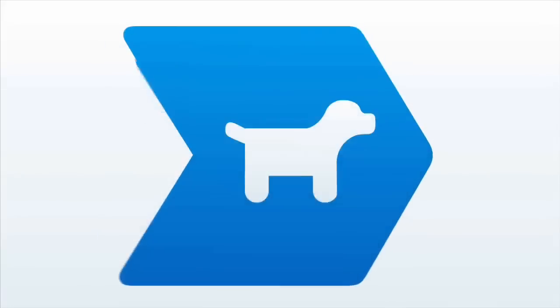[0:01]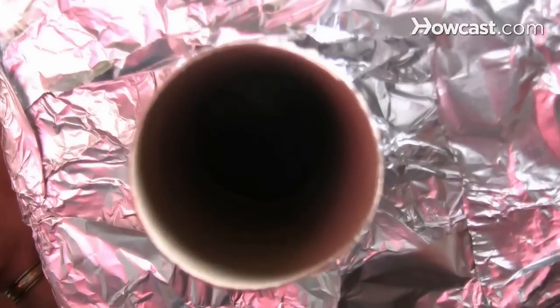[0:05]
How to make a spectroscope. If you're itching to discover the wonders of the world around you, this guide will have you gazing at the unique spectrum fingerprint of each element right at home.
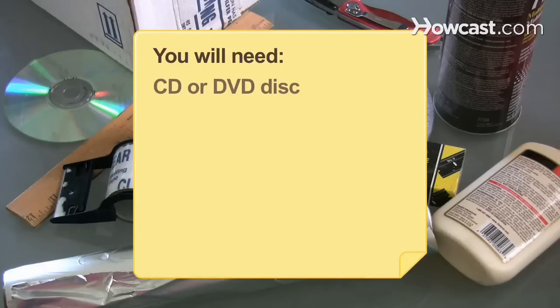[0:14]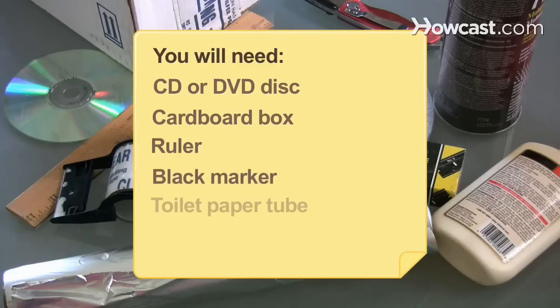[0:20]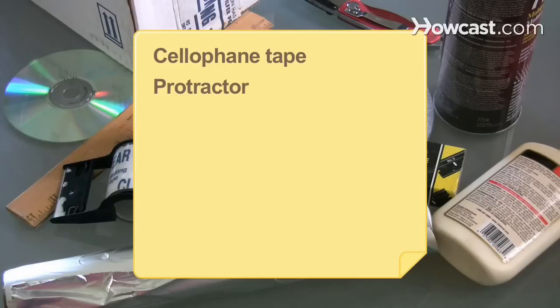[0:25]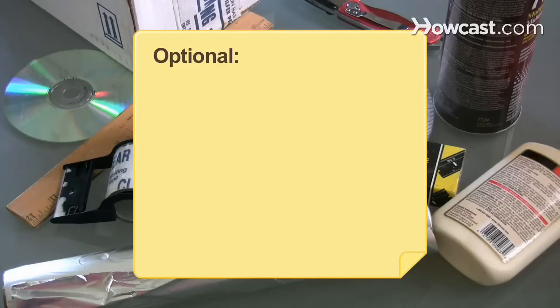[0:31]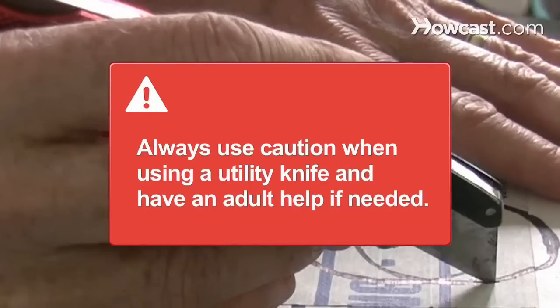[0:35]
You will need a CD or DVD disc, a small cardboard box, a ruler, a black marker, a toilet paper tube, a utility knife, cellophane tape, a protractor, aluminum tape or foil and glue, and two razor blades. Optional, black paint. Always use caution when using a utility knife and have an adult help if needed.
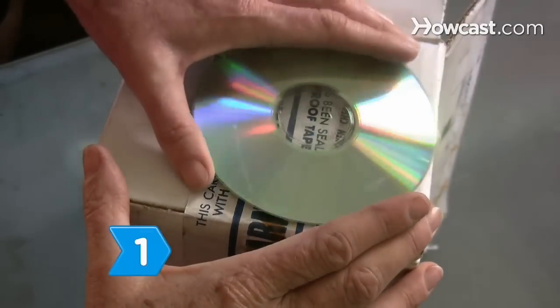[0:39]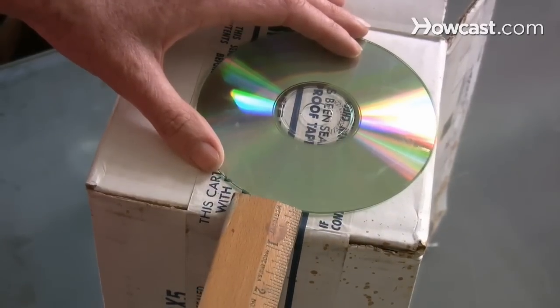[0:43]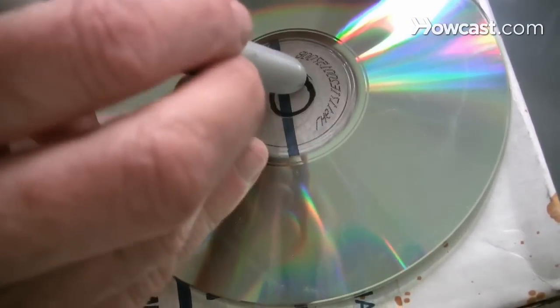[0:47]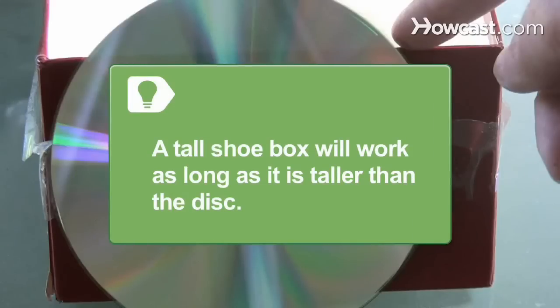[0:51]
Step 1. Place the CD or DVD outside the box against one side about 1/2 inch from the bottom. Trace the small spindle hole in the middle with a black marker. This is the height of the viewing port. A tall shoebox will work as long as it is taller than the disc.
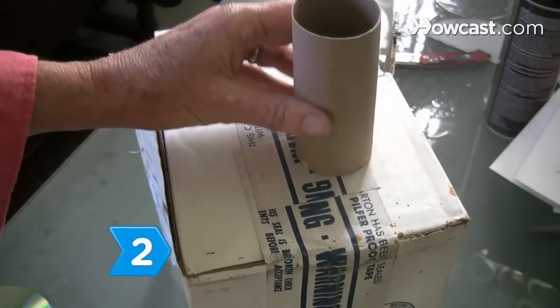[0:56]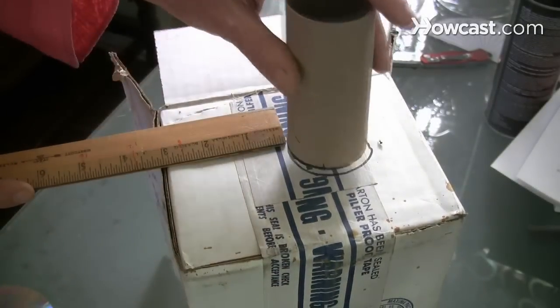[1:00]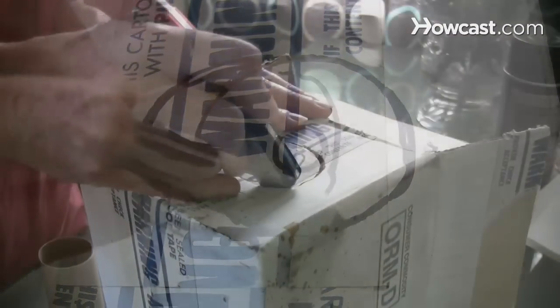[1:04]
Step 2. Trace the toilet paper tube circle over the CD spindle hole. Move the tube over 1/2 inch and trace another circle. Connect both circles to make an oval and cut out the shape using a utility knife.
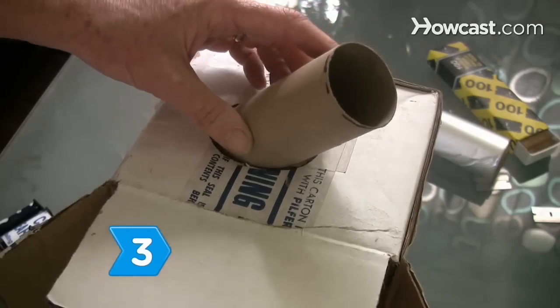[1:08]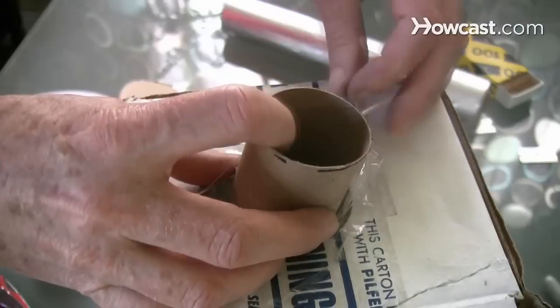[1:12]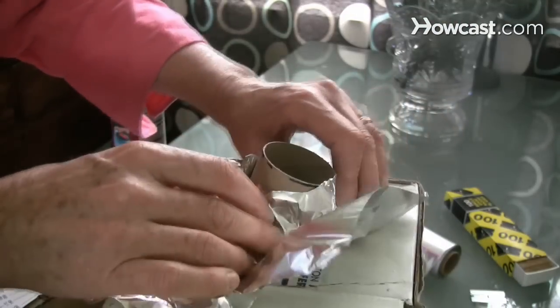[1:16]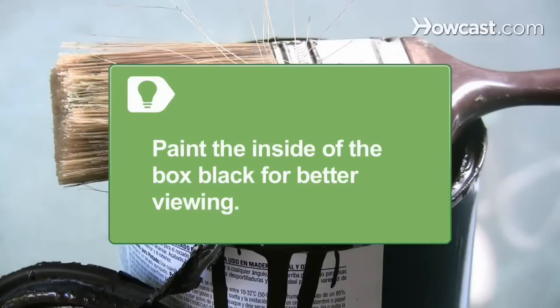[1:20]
Step 3. Tape the toilet paper tube halfway through the port at a 60-degree angle using plain cellophane tape and a protractor. Seal around the tube with aluminum tape or tin foil and glue to block out all light. Paint the inside of the box black for better viewing.
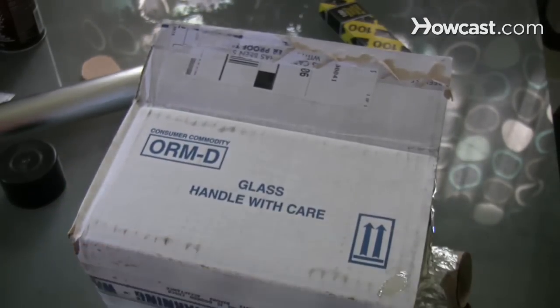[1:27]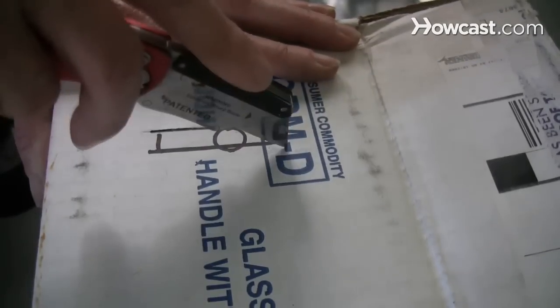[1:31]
Step 4. Turn the box a quarter turn clockwise and use the CD to measure another hole. Cut out a small slit through the circle 1/2 inch wide and 2 inches tall.
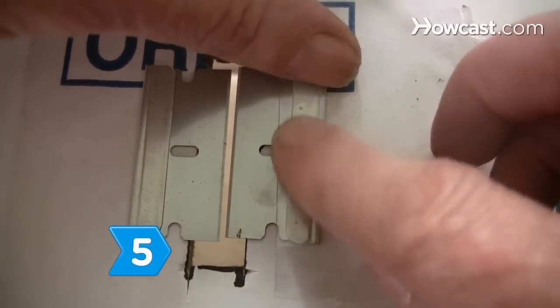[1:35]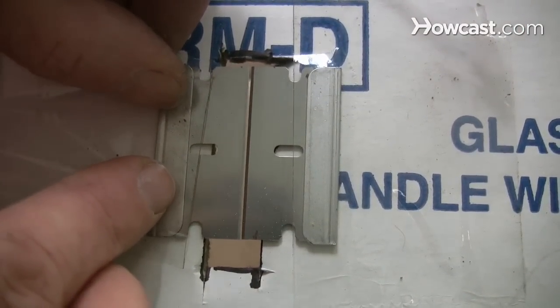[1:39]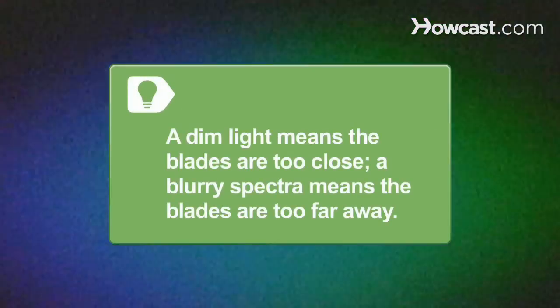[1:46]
Step 5. Tape both razor blades together on the box so their sharp edges almost touch. Make a very small sliver of light through the slit cut in the box. If the light is too dim, your blades are too close. If the spectra is blurry, your blades are too far apart.
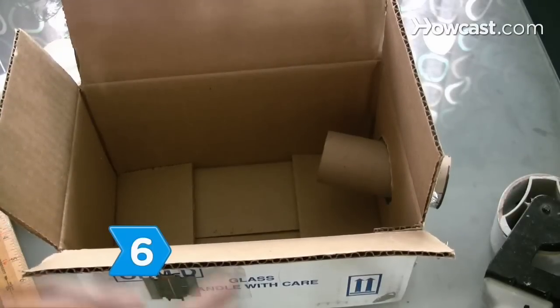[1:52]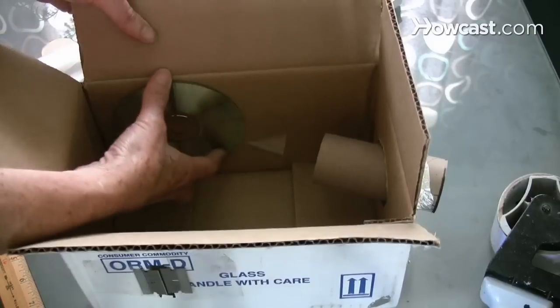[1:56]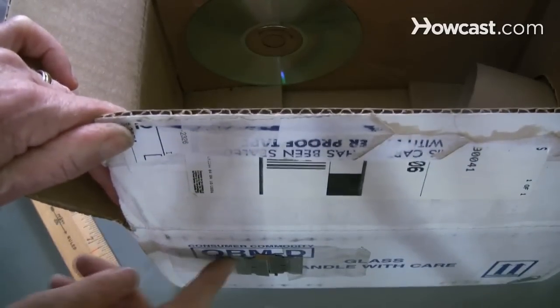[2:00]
Step 6. Tape the CD or DVD inside the box opposite the razor blade slit with the rainbow or prism side out. Try to offset the CD from the box wall the same distance as your razor blades.
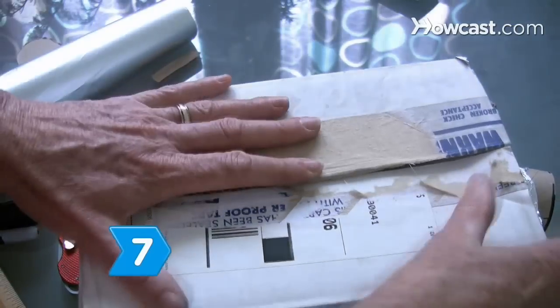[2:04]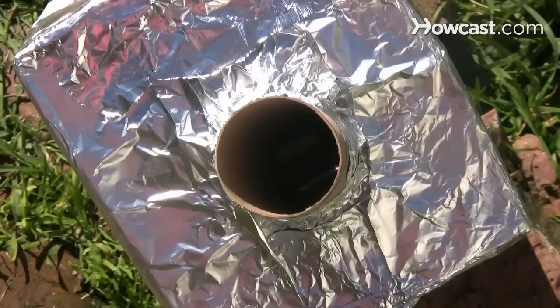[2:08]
Step 7. Seal the box completely using aluminum tape or foil and glue. Peer through the toilet paper tube, point the razor blades at a light source, and gaze at the color spectrum of the world around you.
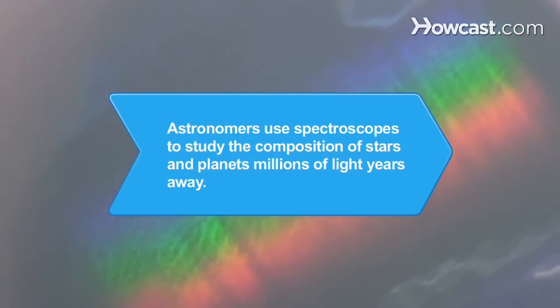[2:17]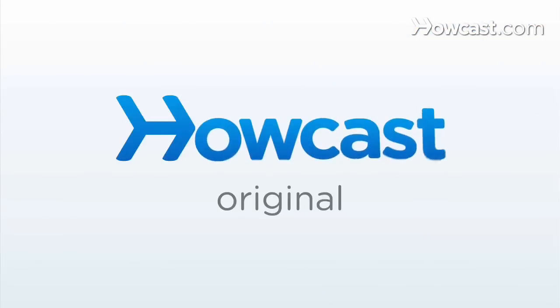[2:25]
Did you know? Astronomers use powerful spectroscopes and computers to study the composition of stars and planets millions of light years away from Earth.